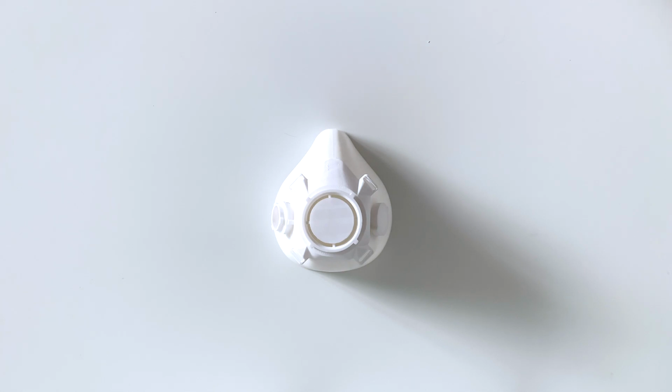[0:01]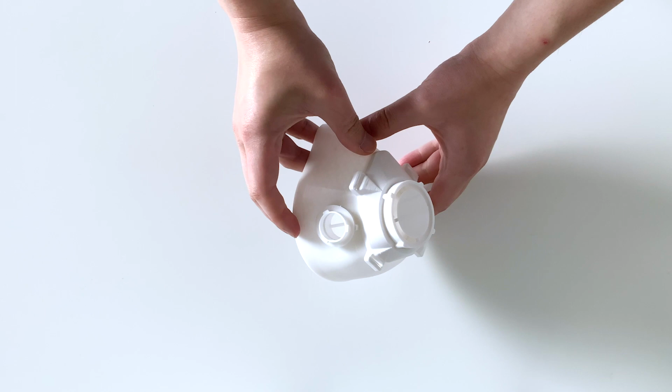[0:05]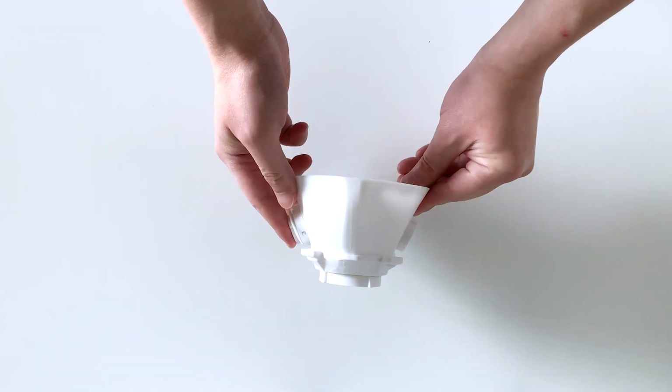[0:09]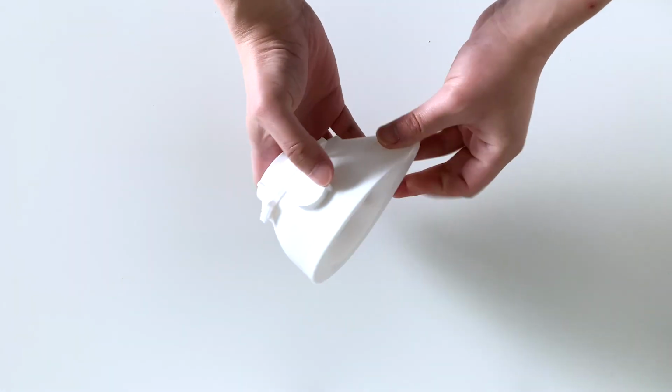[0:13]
How do you fit two systems into one mask? Some wanted the 3M respirator alternative, and others just wanted a simple setup with a simple filter. Well, here's my take. Let's go.
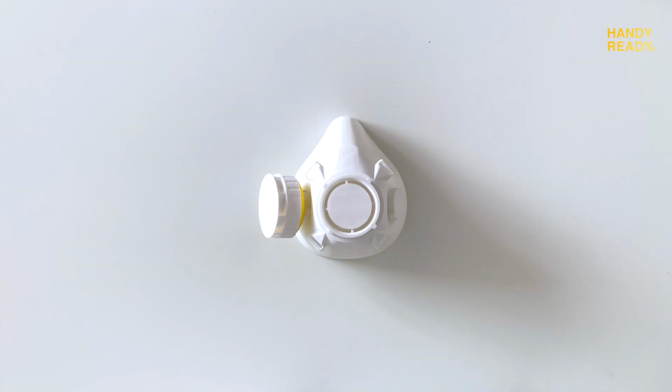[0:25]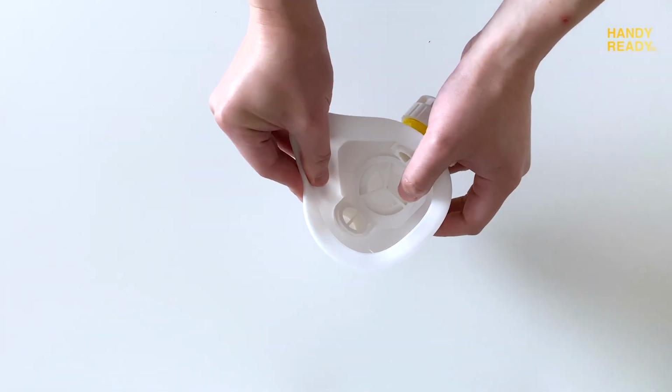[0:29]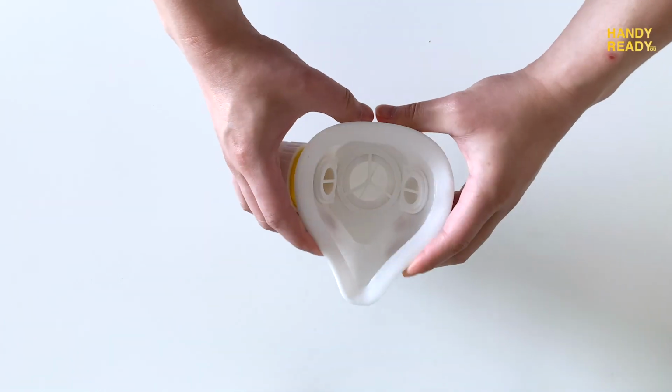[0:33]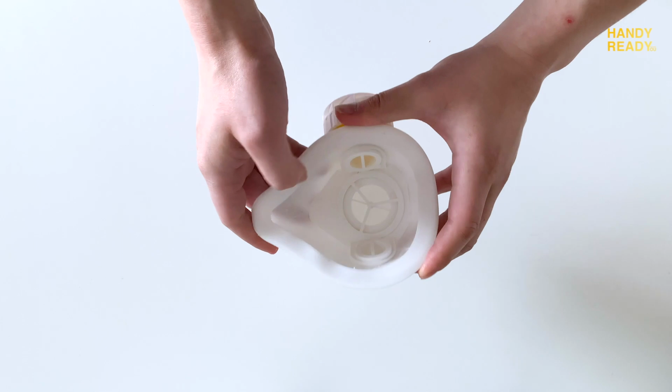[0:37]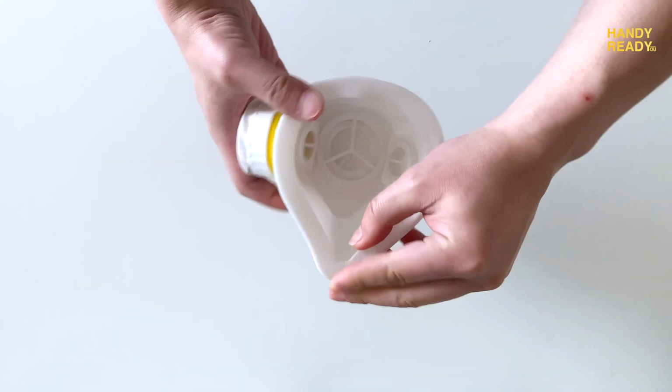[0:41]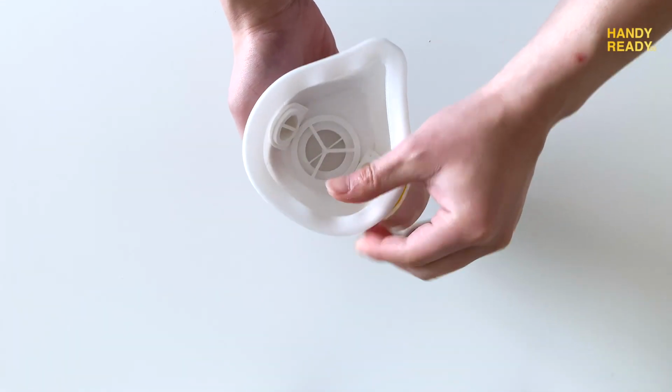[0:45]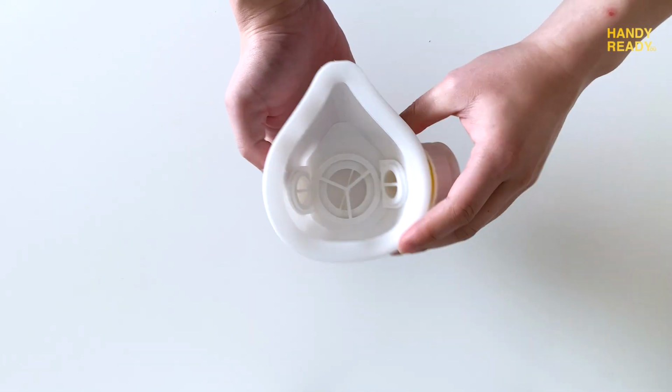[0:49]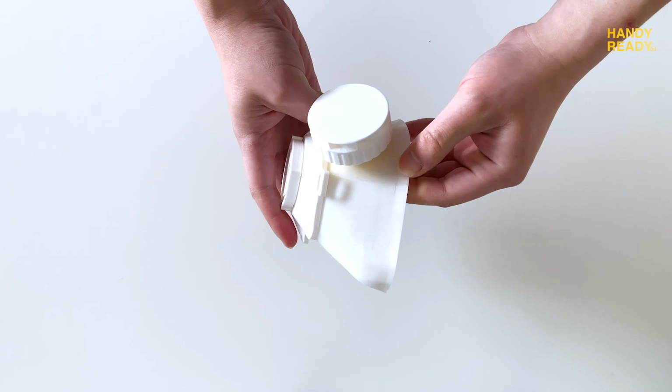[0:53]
Today, we will look at the 3D printed DuoMask. First, we will go over the basics and the design thinking behind it. Then, I will show you how to assemble it. Third, I will show you all my print settings specifically for Ender 3, so you guys can print it yourself. For those who wanted to jump ahead, you can check the timestamp in the description below.
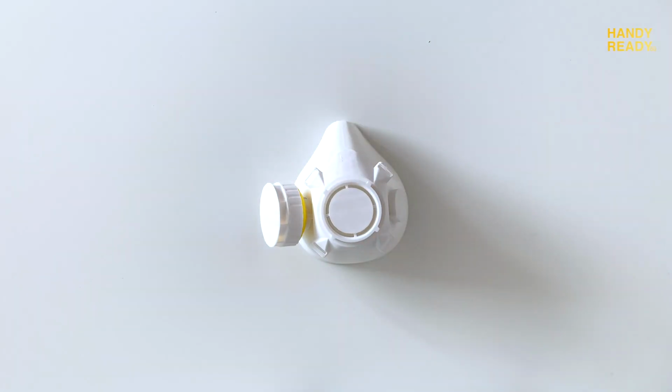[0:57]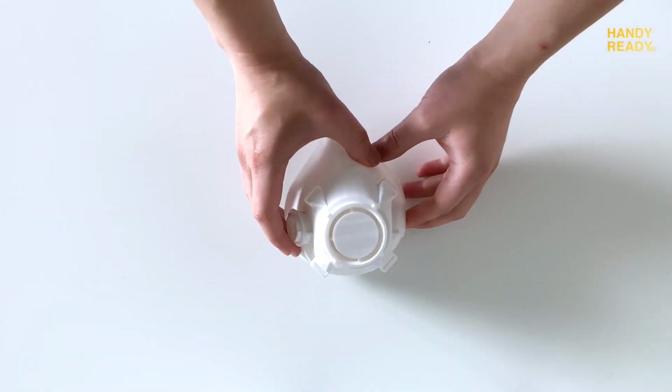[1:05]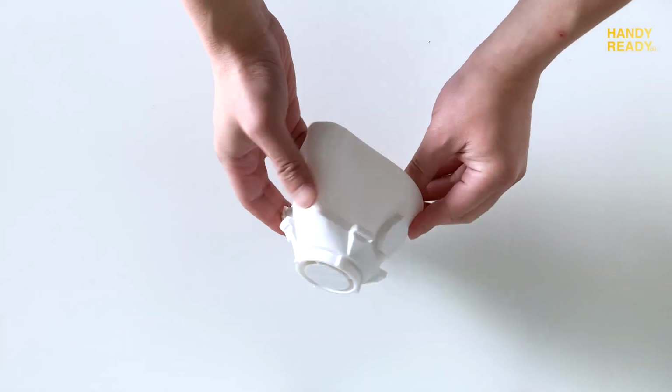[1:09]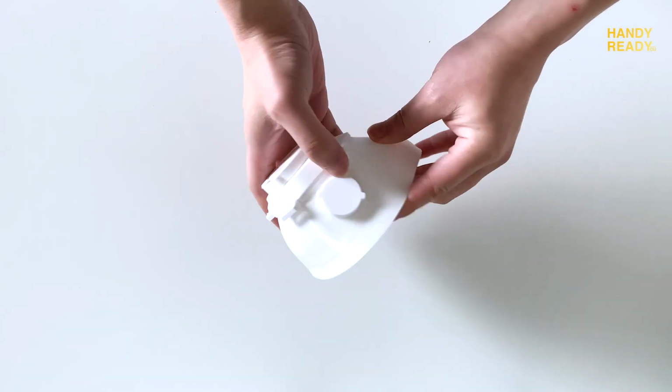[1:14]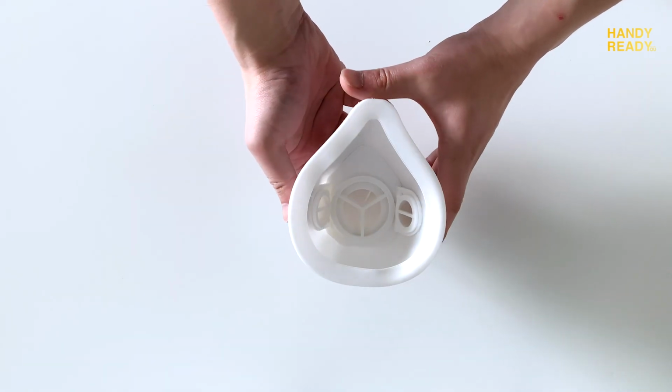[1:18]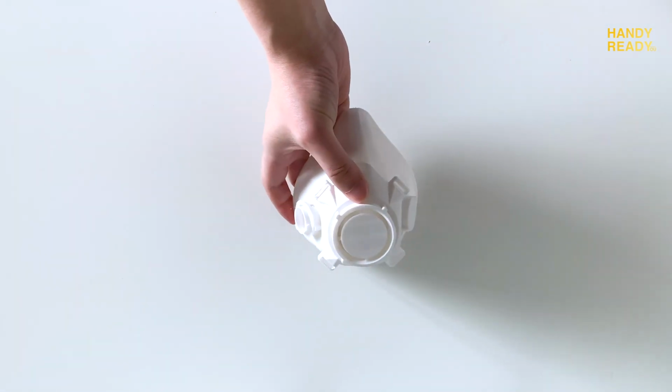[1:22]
So what exactly is a DuoMask? As the name suggests, this mask works in two systems. One, it can be operated with just a simple filter. And for those of you who need it to wear for a long period of time or require higher airflow and comfort, they can choose to use the more advanced 3M mount system with exhaustion system.
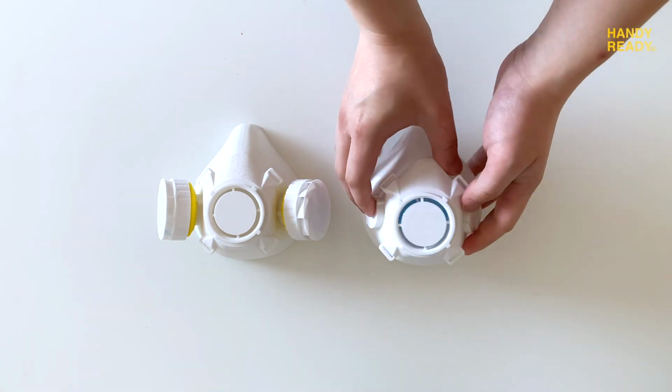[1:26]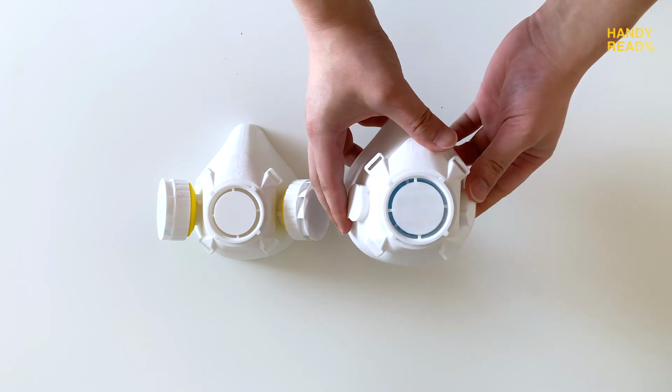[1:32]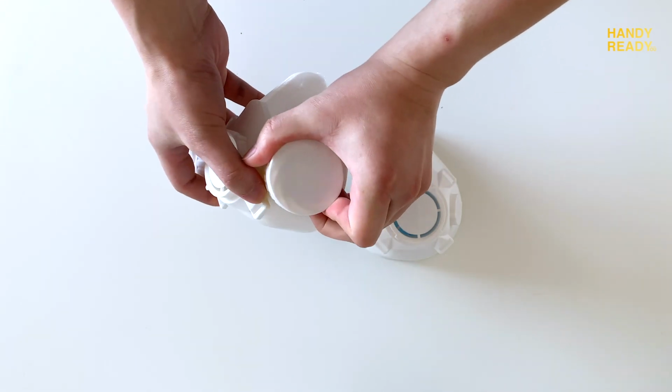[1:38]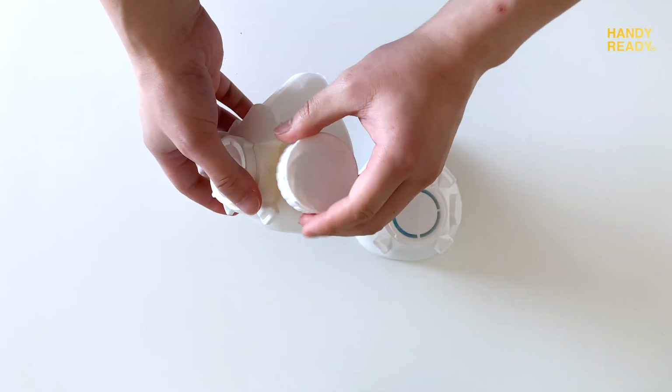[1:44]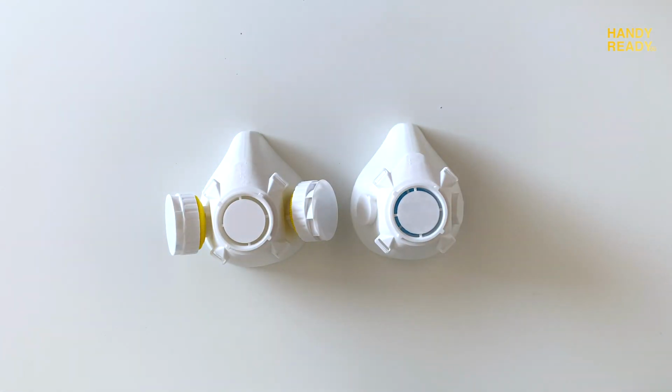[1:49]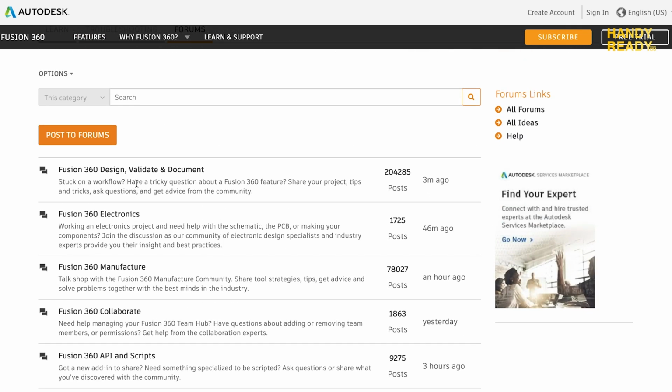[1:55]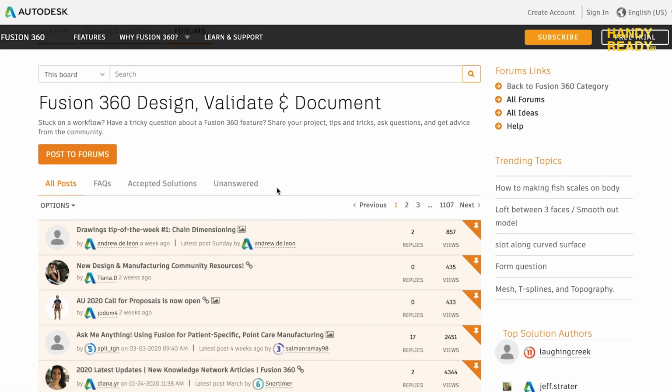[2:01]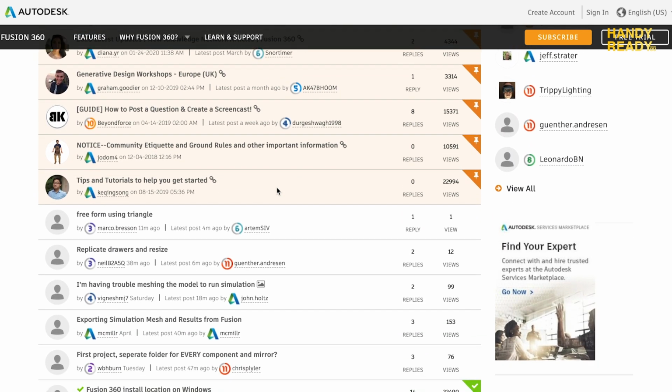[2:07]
I'm sure at this point you're a little bit confused, but don't worry. Let me explain the design, and by the end of it, I'm sure you'll know exactly which setup you will need. In regards to the design, the DuoMask took me roughly about 2 months to get to this stage. I must give a big thanks to the Fusion 360 community to answer all my beginner questions, as I had zero knowledge and background in 3D modeling. So for those of you who want to make changes and want to make a new design, do it. It's never too late. It's only too late if you never give it a try.
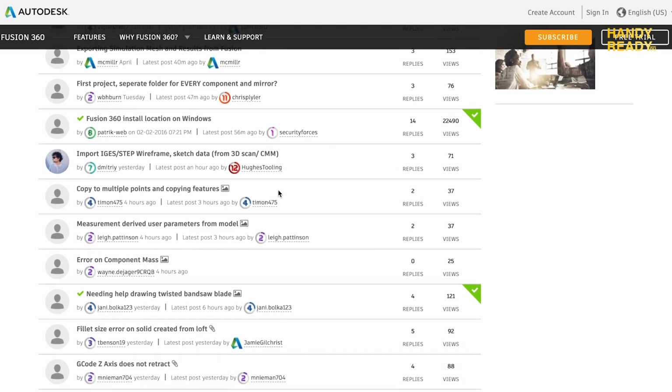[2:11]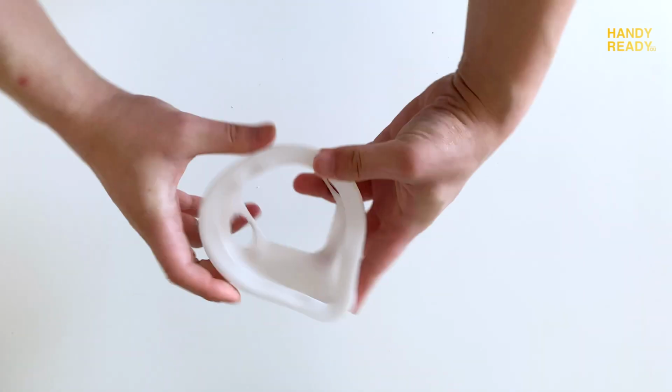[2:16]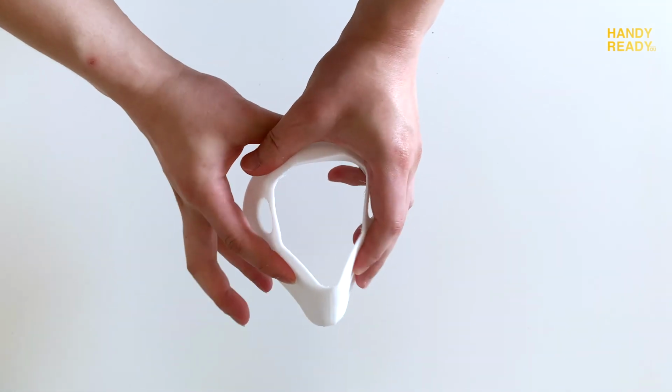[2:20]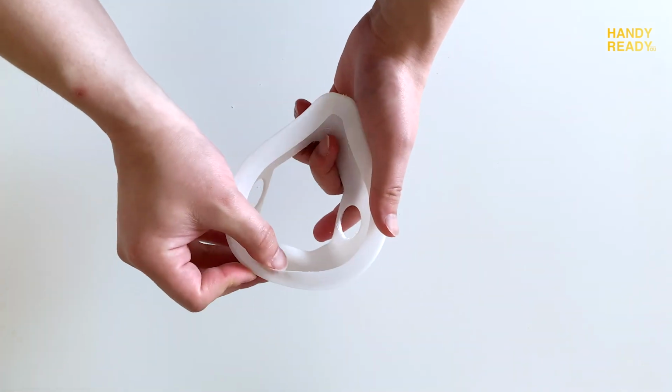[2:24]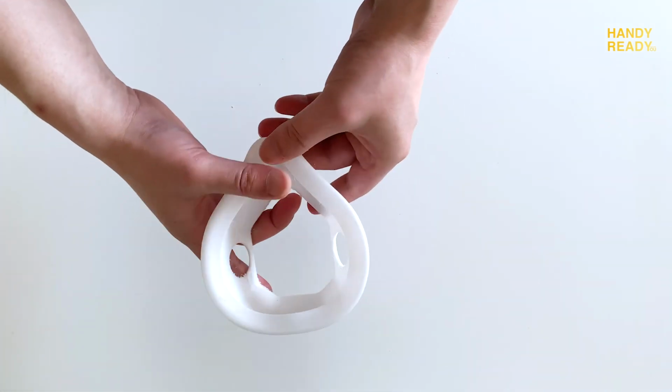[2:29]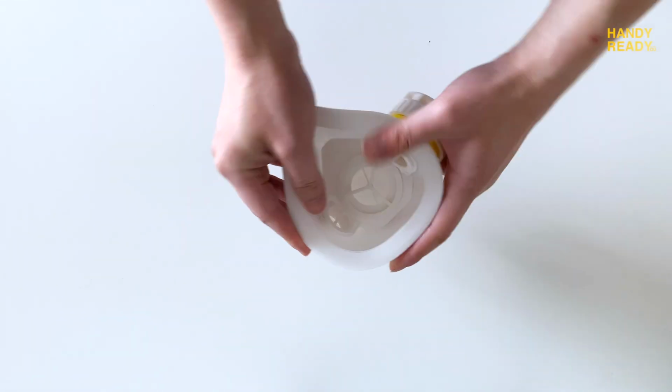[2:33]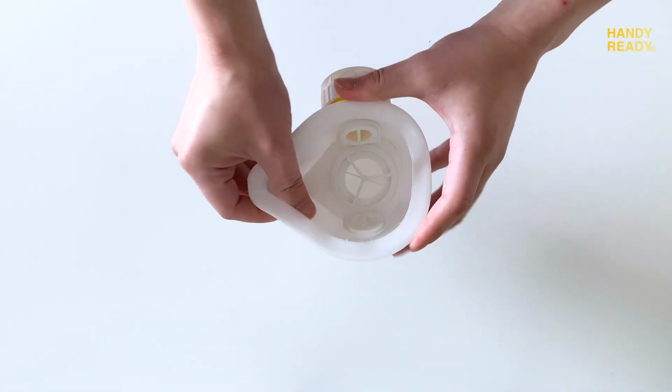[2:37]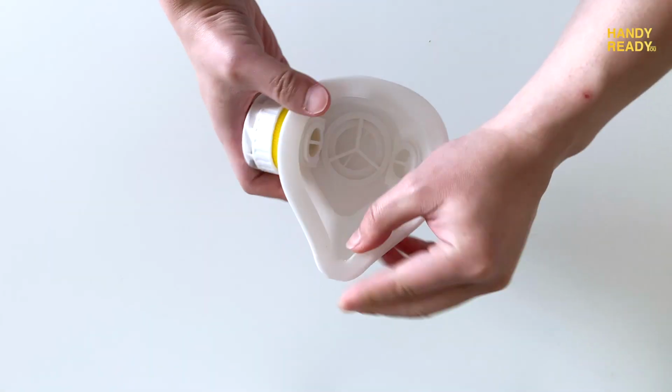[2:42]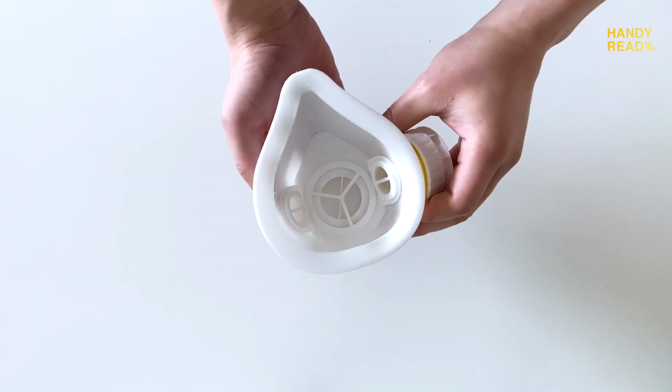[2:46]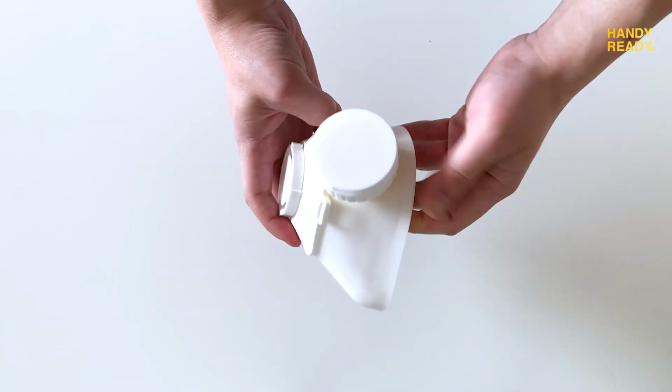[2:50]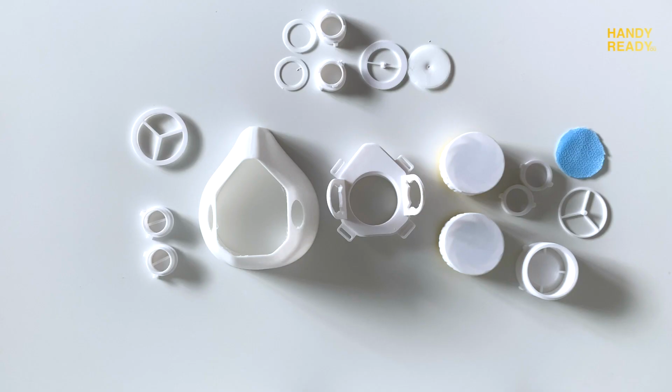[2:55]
With that out of the way, let's start with the major design obstacles. The number one key obstacle for any kind of mask is the seal. The mask must have a proper seal, or else why bother wearing a mask at all? As simple as it may sound, a proper seal has to do with a lot of things. For one, the fit and sizing. Then there's the tolerance for when you speak and your facial movement. Moreover, the comfort. And last but not least, to keep the consistency, no post-production or add-ons after the mask has been printed, such as adding foams, gluing, or stitching.
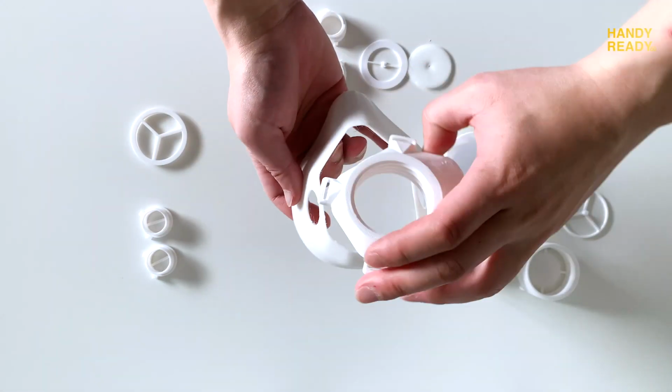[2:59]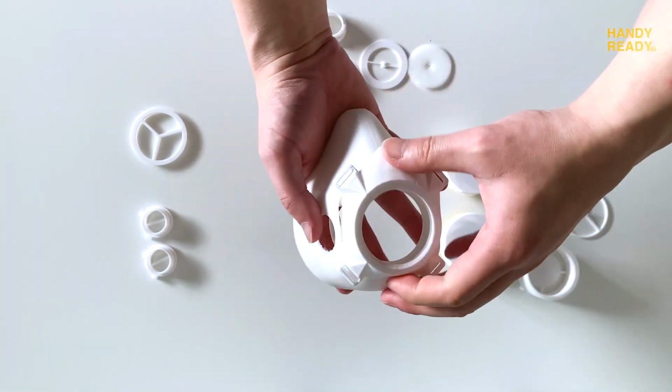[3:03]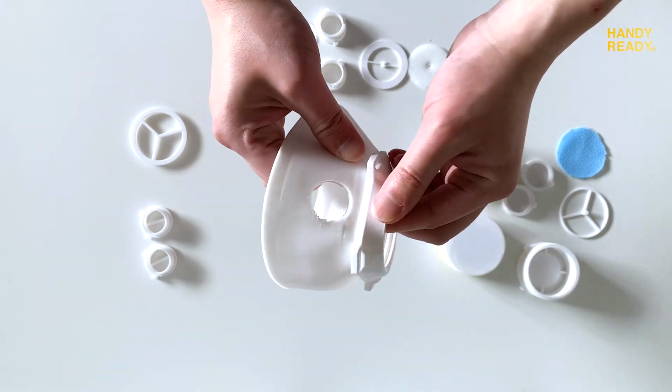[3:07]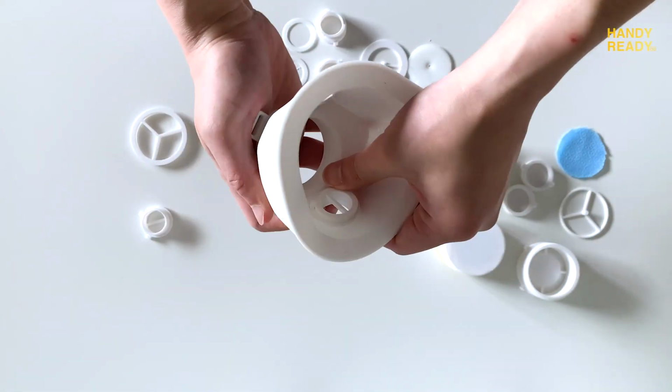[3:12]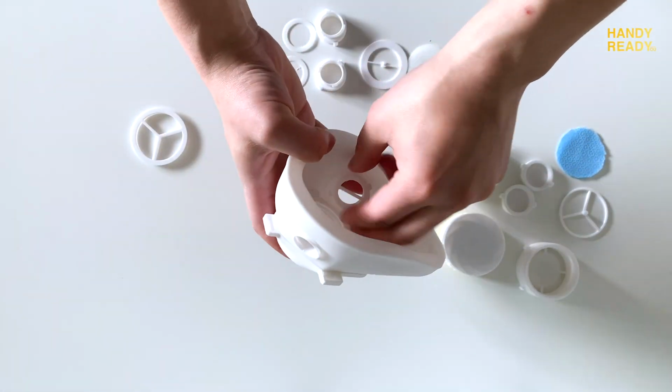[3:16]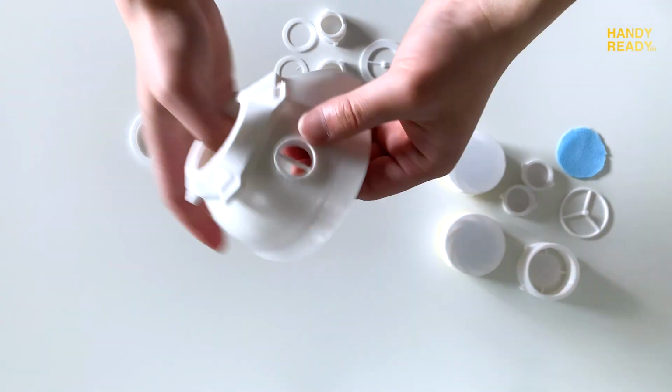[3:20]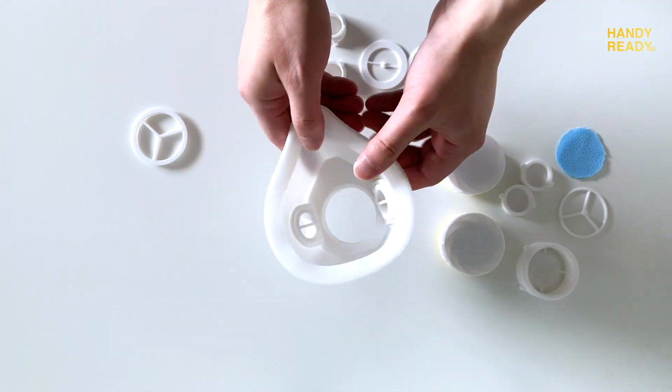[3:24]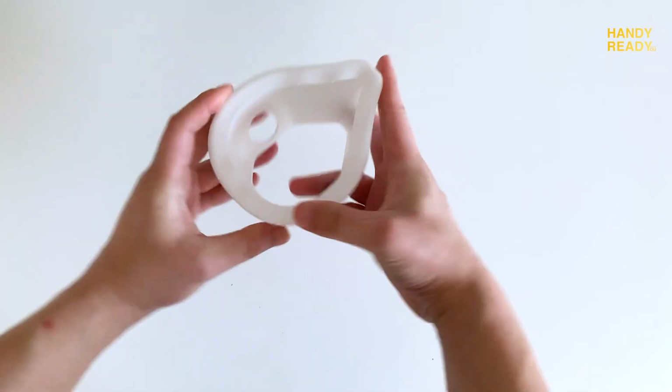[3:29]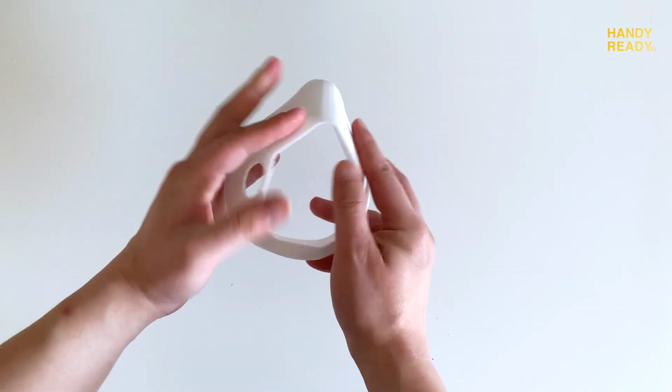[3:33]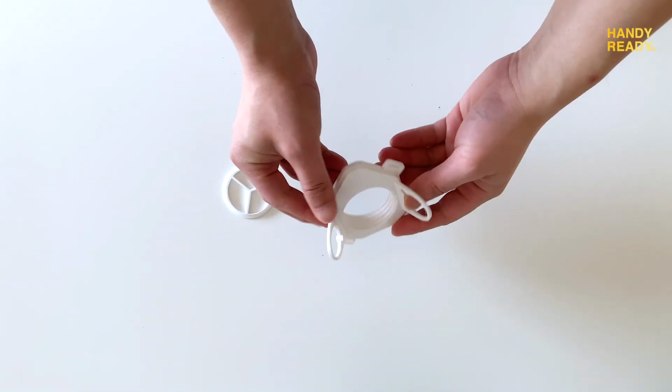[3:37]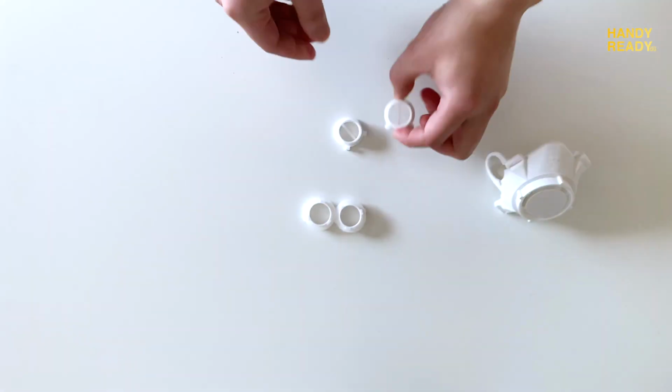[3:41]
With that in mind, I have decided to modularize into different parts because A, you can print different parts with different filaments and different materials. B, it is easier to make improvements for parts in the future. C, breaking into parts does not require support on printing. D, the components are easily replaced if they are broken or worn out. In terms of parts, the DuoMask is made with three major components: the cushion, which is the largest body of the mask, the core, which handles the filter and exhaustion system, and lastly, the adapter on the sides.
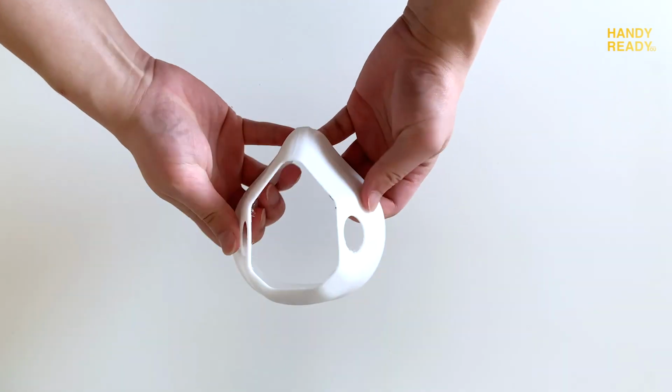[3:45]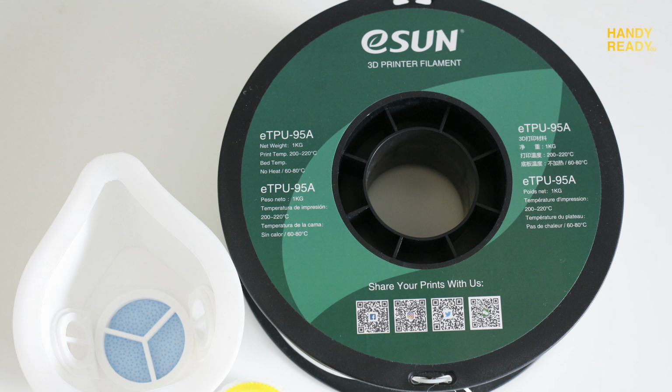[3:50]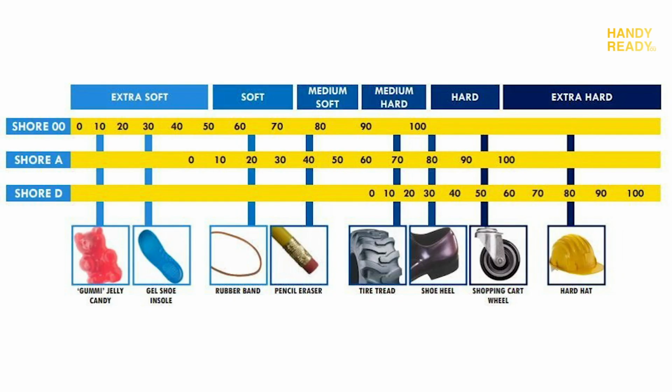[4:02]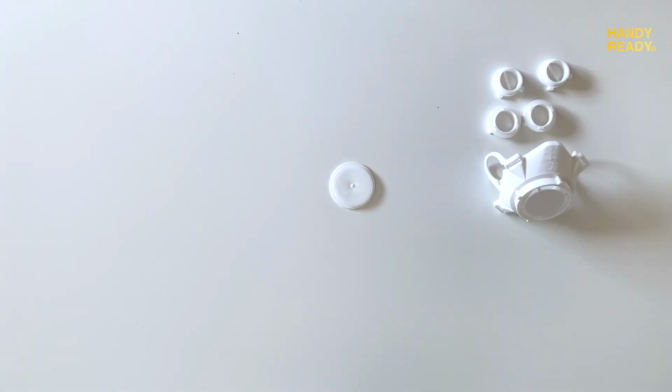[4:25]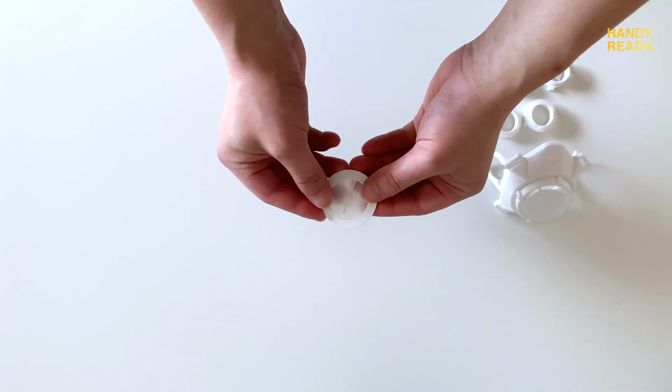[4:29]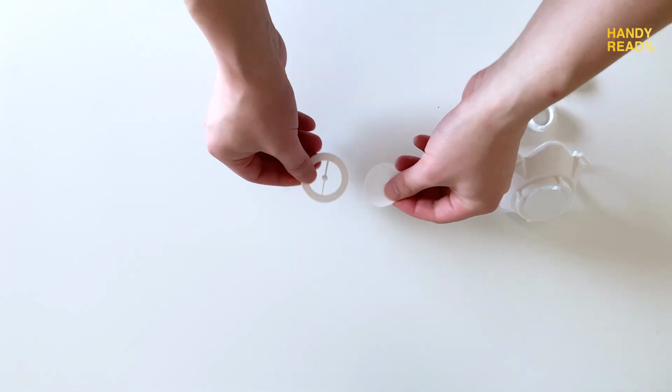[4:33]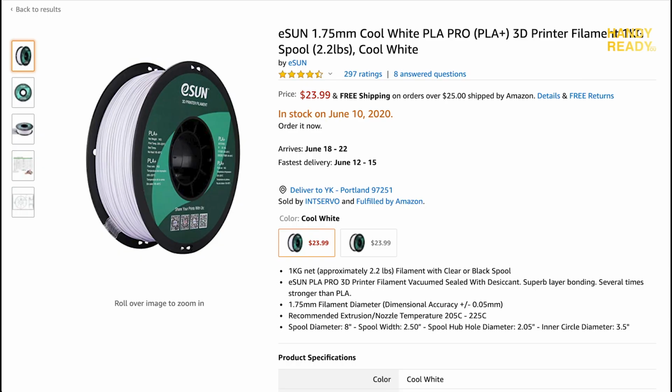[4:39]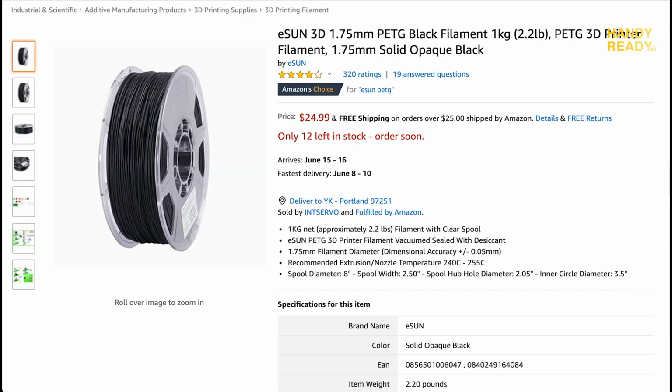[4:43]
For the cushion body, I've picked a flexible TPU filament as it gives a good seal. Specifically, I've used the 95A TPU, which is less flexible TPU, but provides the softness and sturdiness for the main body. The way to read how flexible or soft a TPU is by the number. The lower the number, the softer it is, and vice versa. The higher the number, the harder it is. With the current design, I'm sure you can use the softer TPU, but I chose 95A because many are printing with Ender 3 and it is easier to handle. And most important of all, I was able to print great results with the 95A filament without any new purchase for the extruder. As to the core and adapter, I've picked PLA as it is quite handy to most.
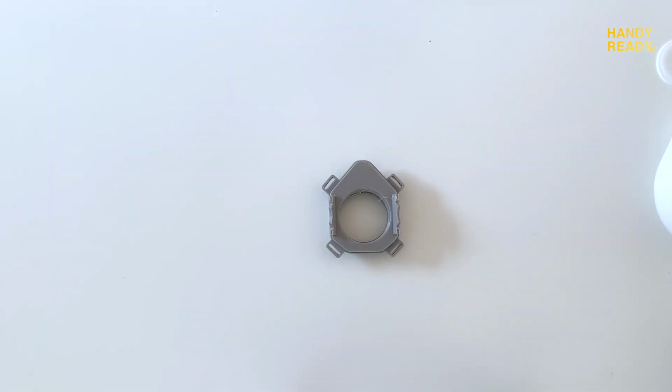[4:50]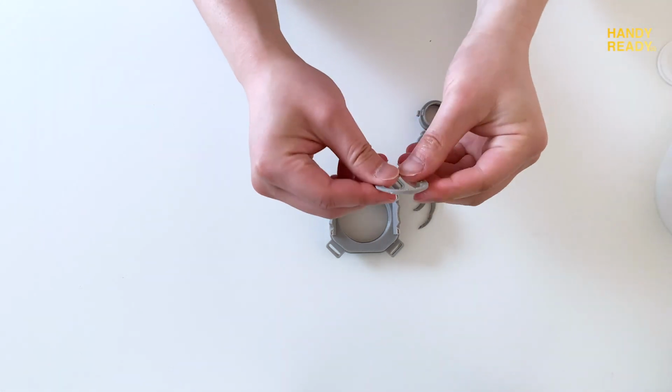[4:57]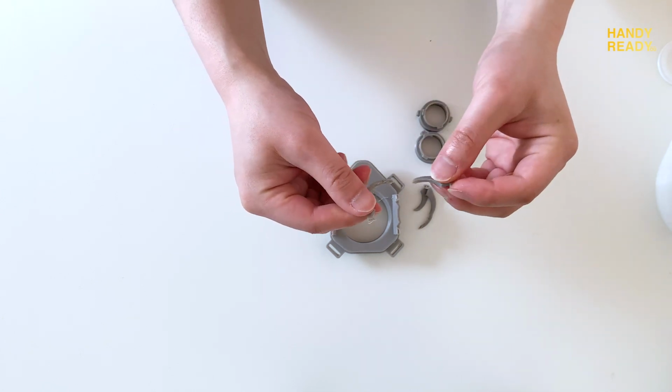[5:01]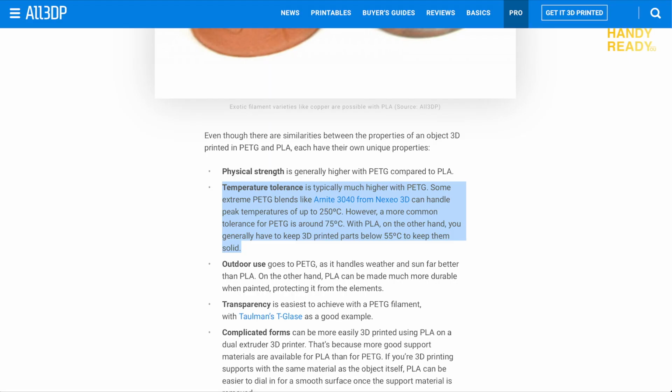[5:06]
I've also tried printing it with PETG, but I've found that printing in PETG requires much higher infills, or else it can snap easily, especially on smaller fine prints. Of course, if you have the time, PETG does yield a better durability, especially under heat, as the heat tolerance is much higher. Either way, both materials should work fine. It is just a matter of personal preference and availability.
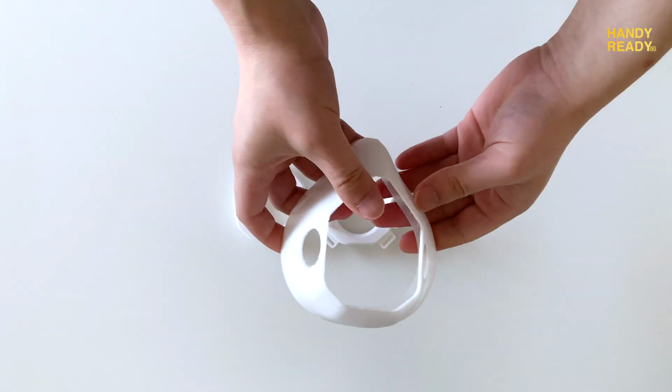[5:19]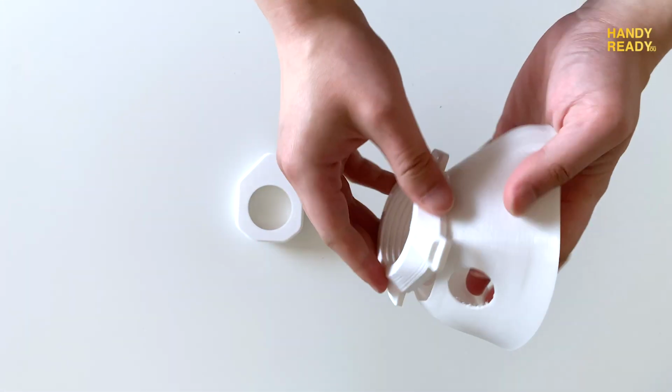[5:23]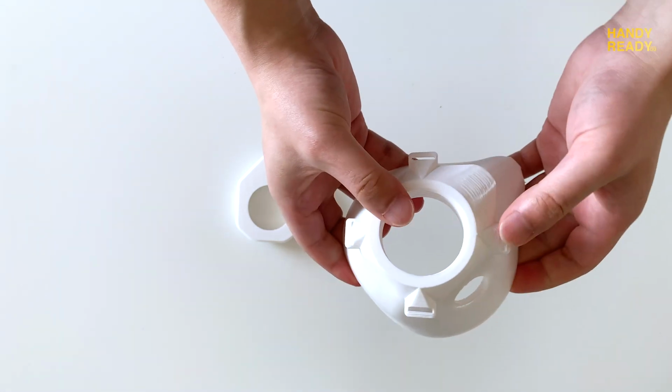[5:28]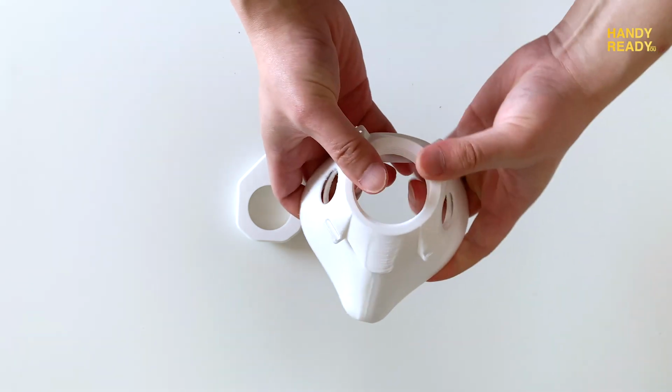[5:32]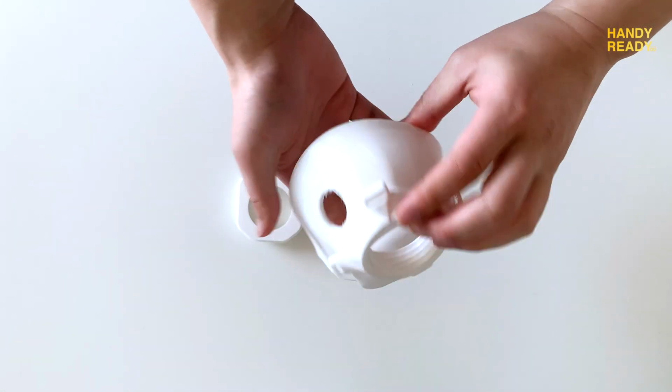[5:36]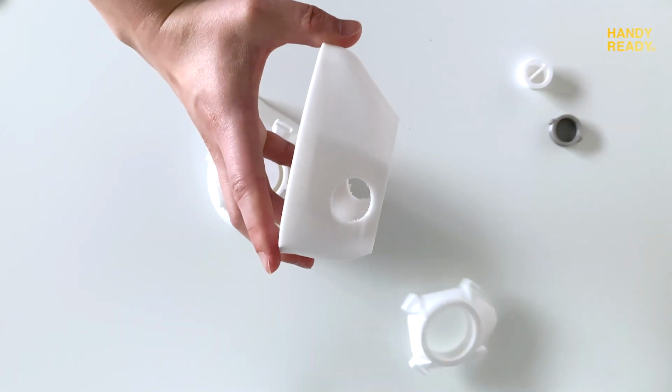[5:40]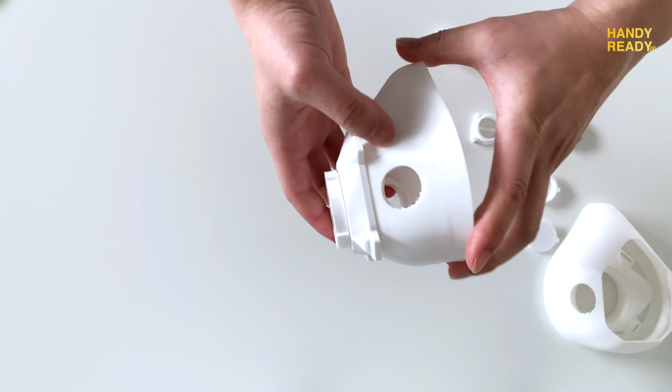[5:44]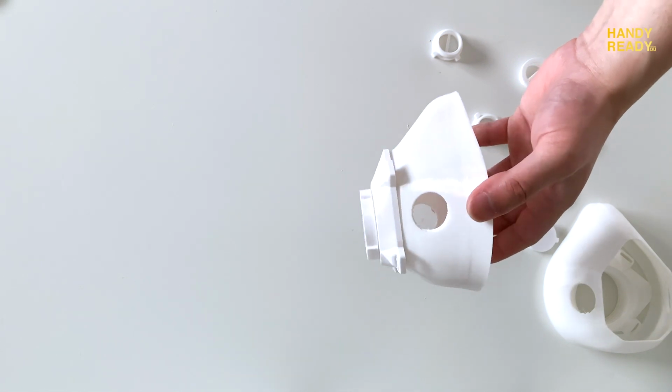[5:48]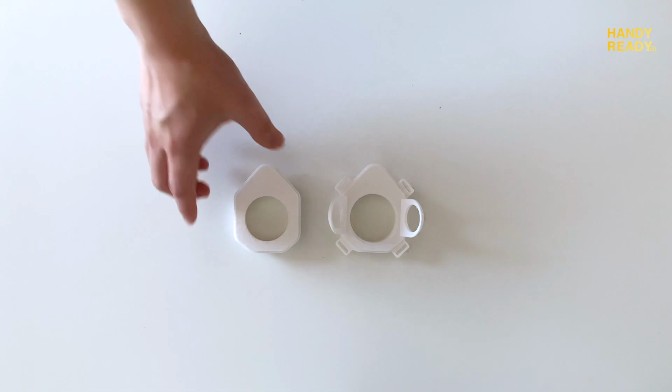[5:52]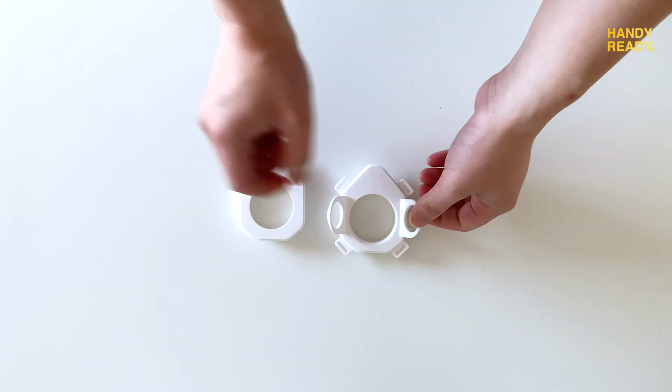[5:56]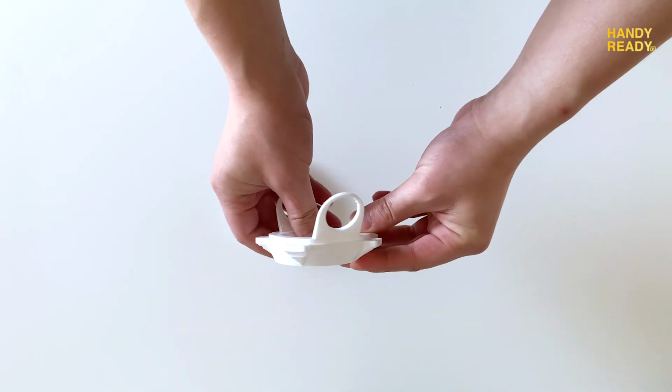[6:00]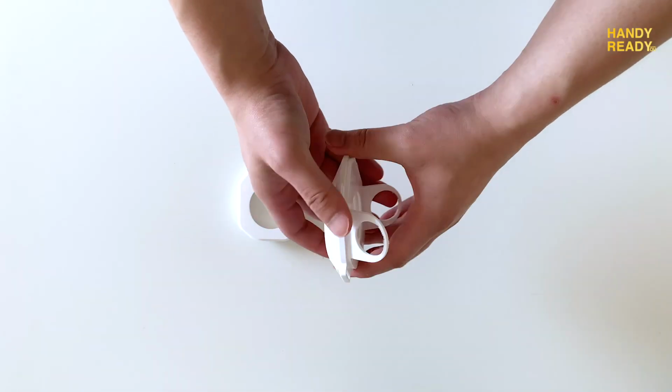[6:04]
The core plays a big part in this design. As the name suggests, it is where everything happens and connects. The strap, the filter or exhaustions, the adapters, and the connection to the cushion. Speaking of which, because the cushion and the core are printed with different materials, merging them securely with a good seal was quite challenging. I've actually spent a lot of time figuring out how to do it, and at last, I've designed the wings which connect the core with the cushion and the adapters, forming a very sturdy structure.
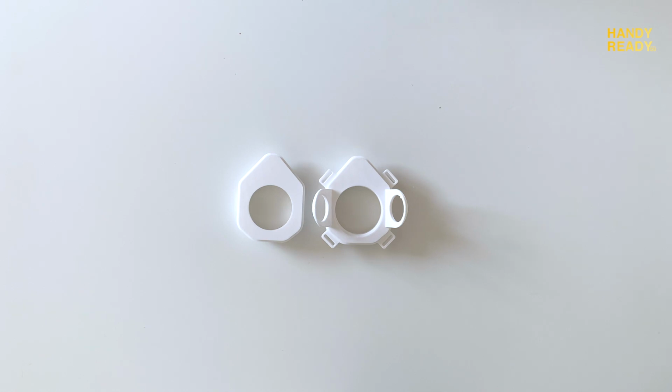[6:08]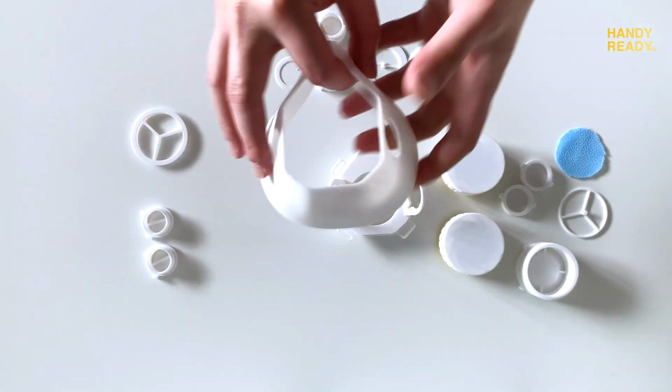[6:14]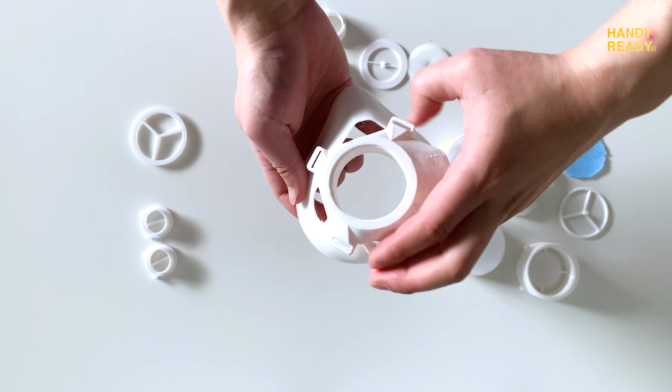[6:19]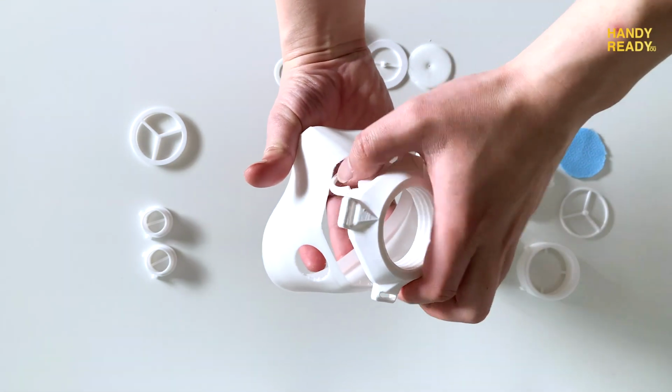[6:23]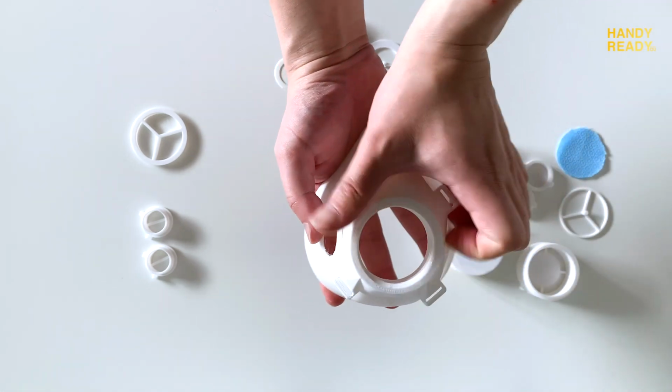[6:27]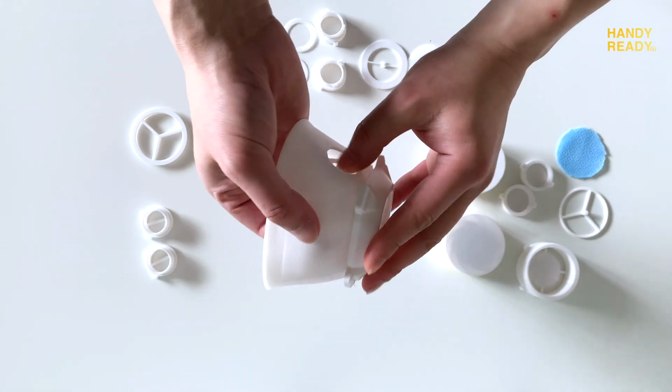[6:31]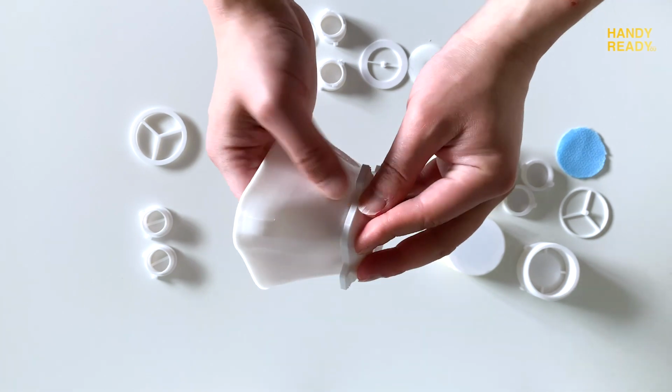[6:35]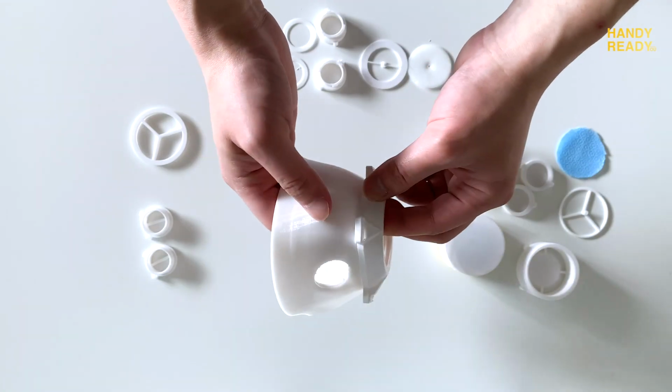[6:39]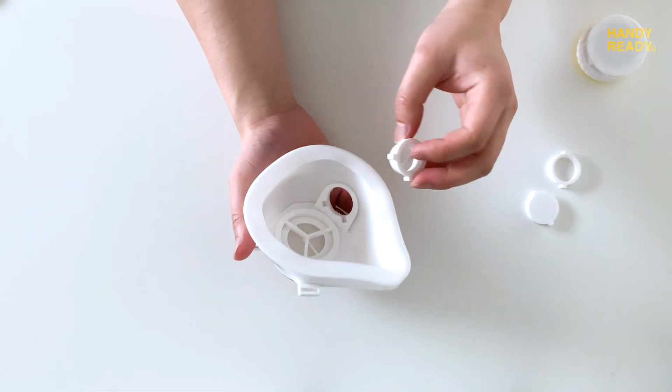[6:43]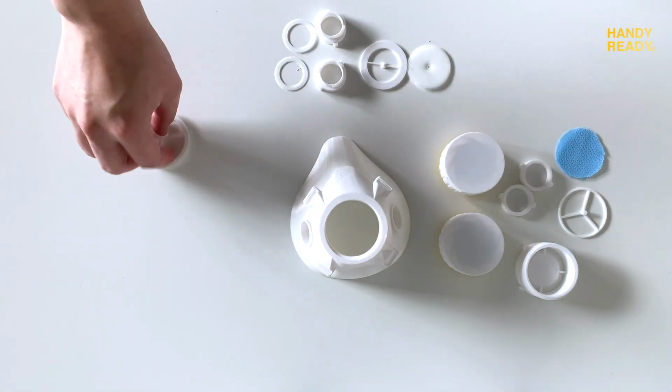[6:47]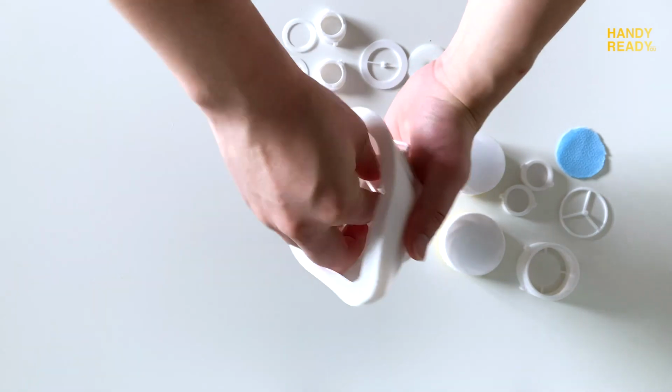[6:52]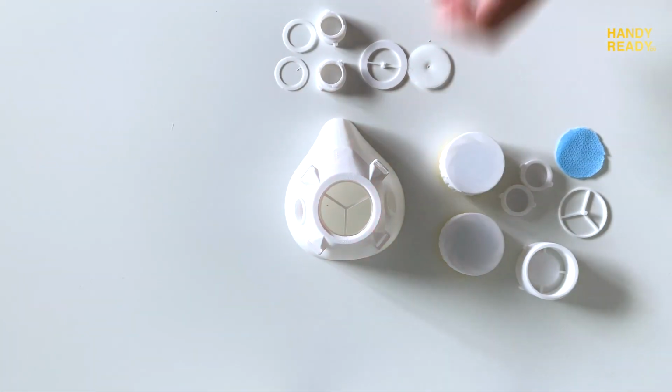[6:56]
Let's talk about the assembly. To assemble the DuoMask, we need to first twist the core 90 degrees towards the cushion. The orientation will give enough room for the wings to fit inside the cushion with just a little bit of pressure on the cushion from top and bottom. Once the wings are in, twist the core to the proper orientation and make sure the rims and edges are properly attached. After that, we insert the inner adapter for both sides. And finally, we twist the core backing, and this forms the foundation assembly for the DuoMask.
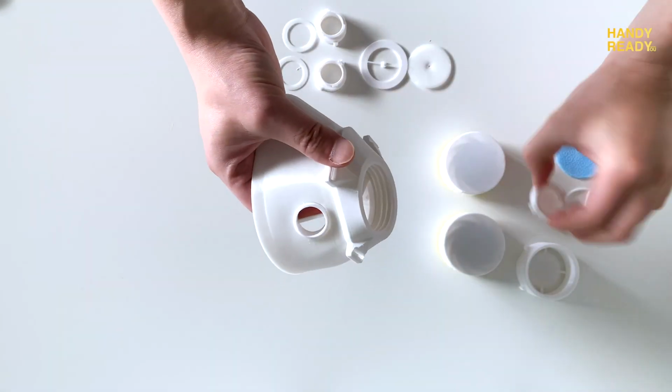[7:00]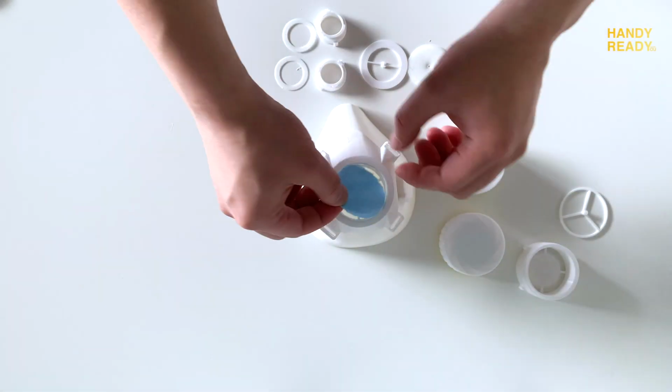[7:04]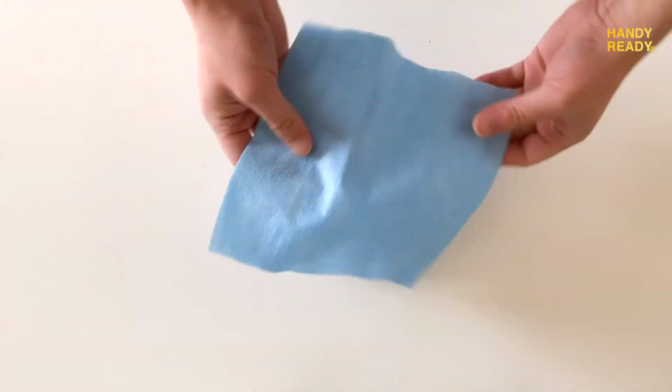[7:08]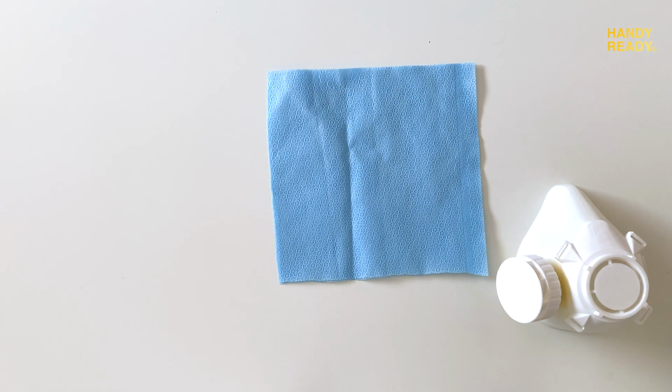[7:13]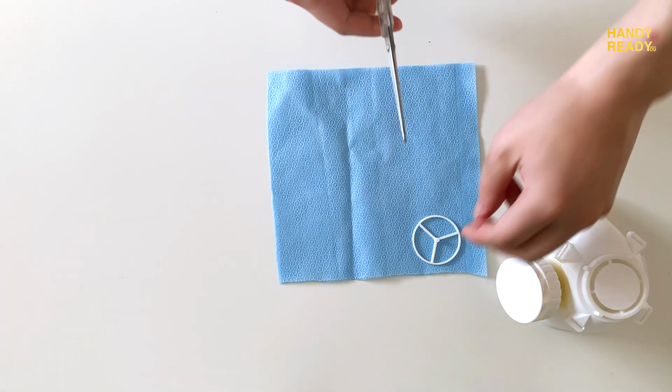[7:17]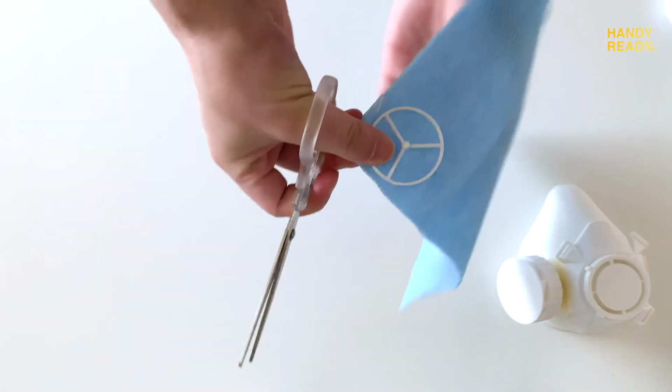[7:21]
For those who wanted to do a simple setup, twist the outer adapter seal for both sides. Then we put the filter inside the core. In terms of filter, I've used a cutout from the sterilization wrap as it is 99% PFE. For those who have no clue what a sterilization wrap is, you can check out my previous video I've made in the link down below.
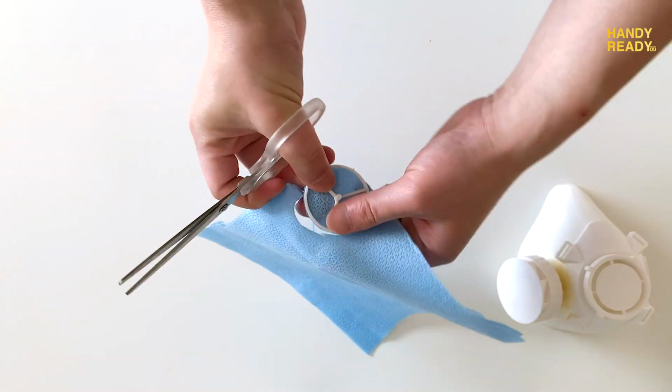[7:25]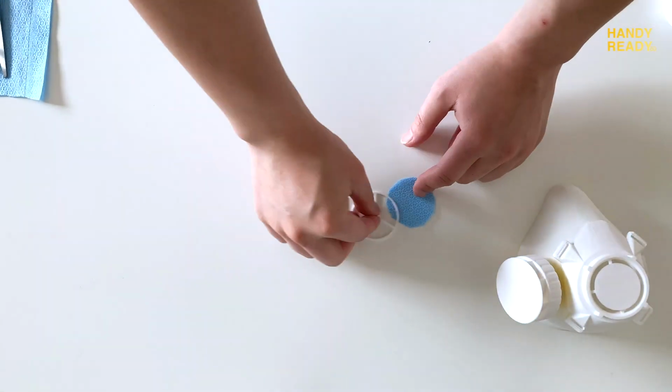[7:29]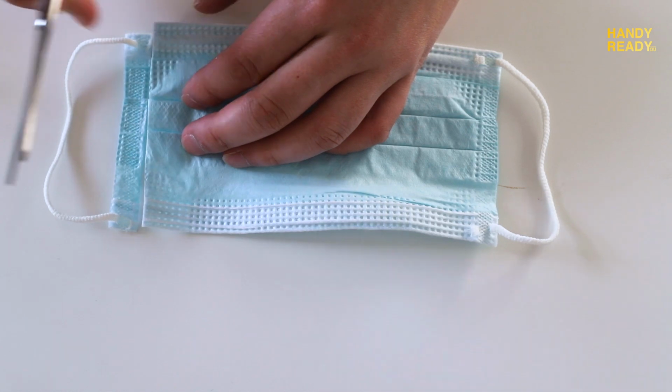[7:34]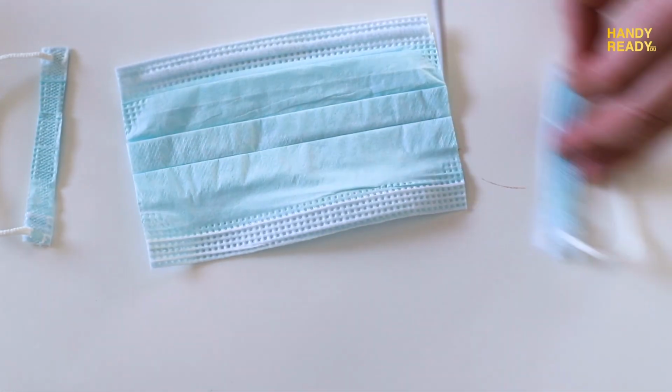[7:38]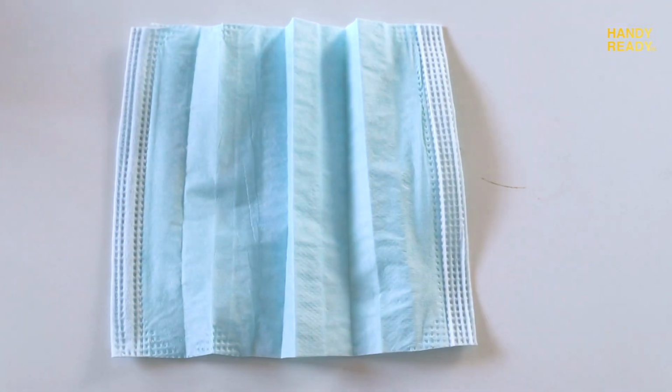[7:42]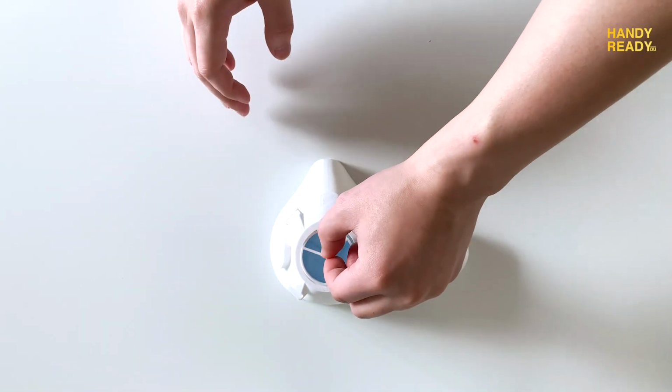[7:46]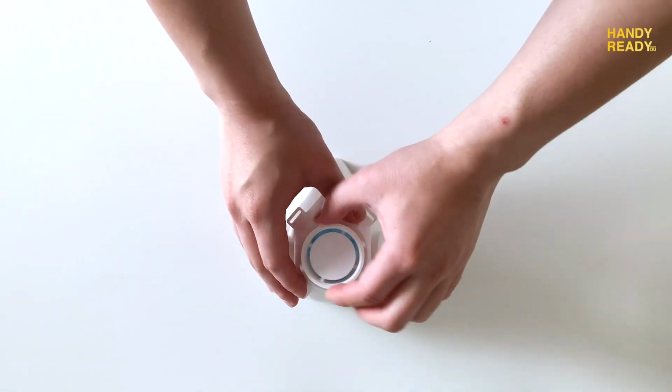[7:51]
Another alternative to sterilization wrap is that you can cut out from a surgical mask. And I know some of you are still using cotton pads as a filter, and I don't really recommend using it as it doesn't have a high enough filtration. Okay, once the filter is in, we put the filter backing to secure and flatten out the filter. And lastly, we twist the cover to finish up the assembly.
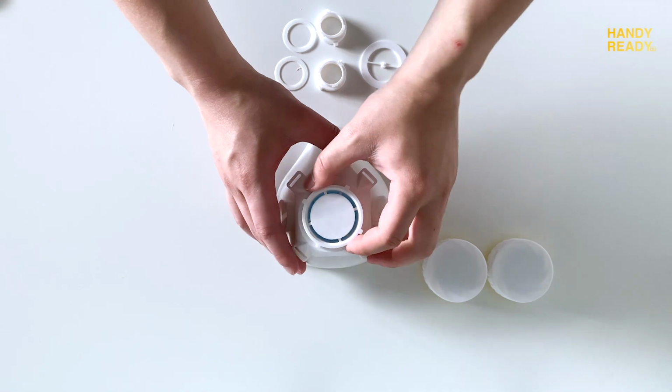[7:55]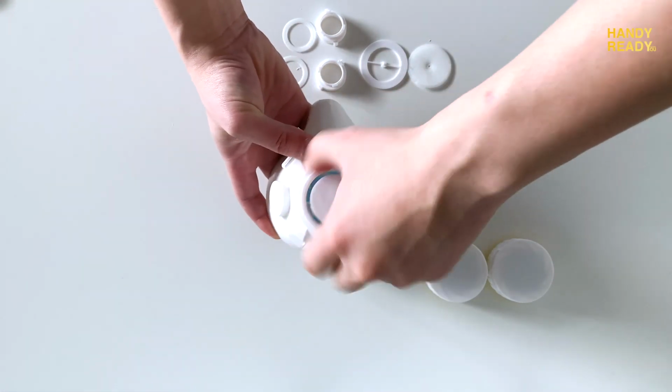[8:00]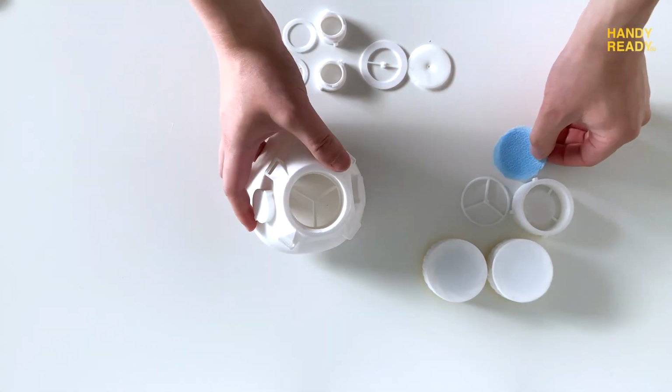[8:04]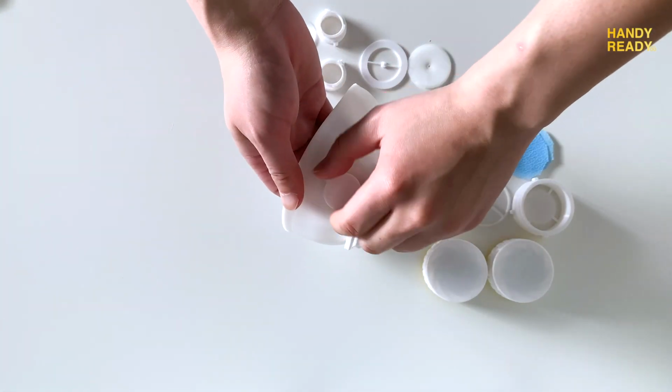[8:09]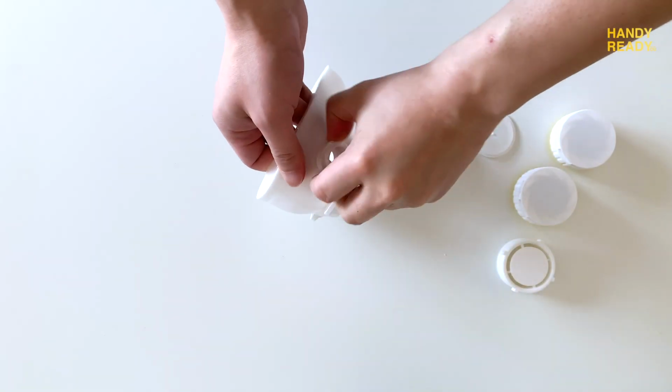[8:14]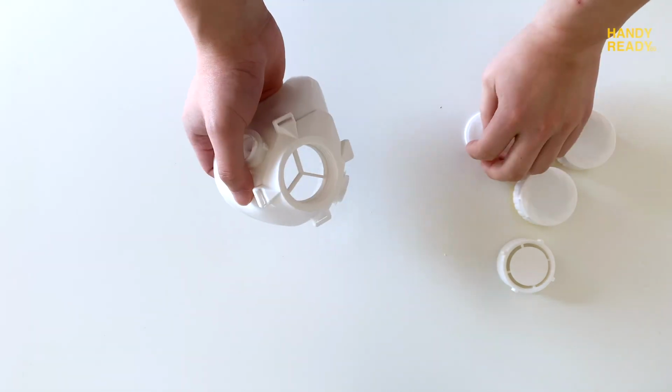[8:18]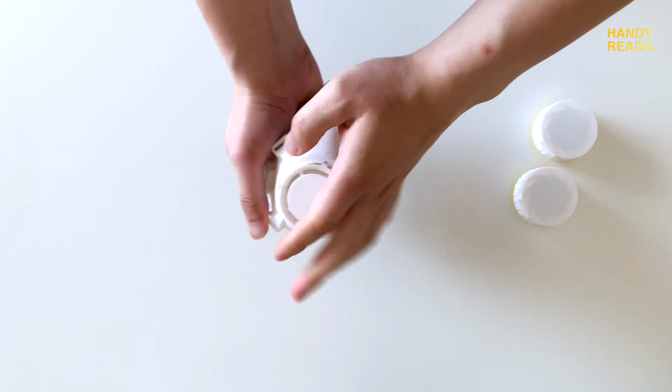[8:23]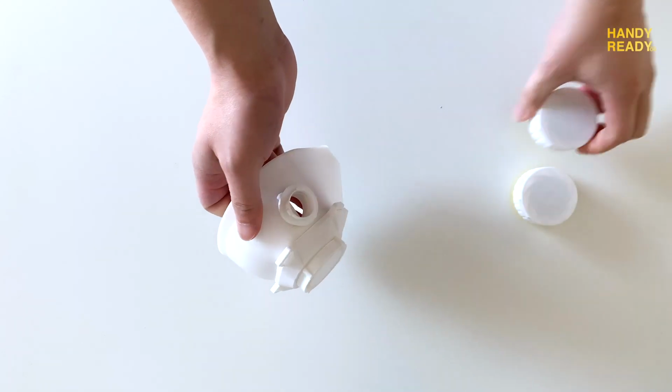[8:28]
For those who wanted a more advanced setup with a 3M mount and exhalation system, first, we need to remove the cover, filter backing, and the filter. Then the adapter seal from both sides. Now that we're at the foundation, we put the 3M mount adapters on both sides and put in the adapter ring. Then assemble the valve TPU with the valve backing. And lastly, put it inside the core and twist in the cover.
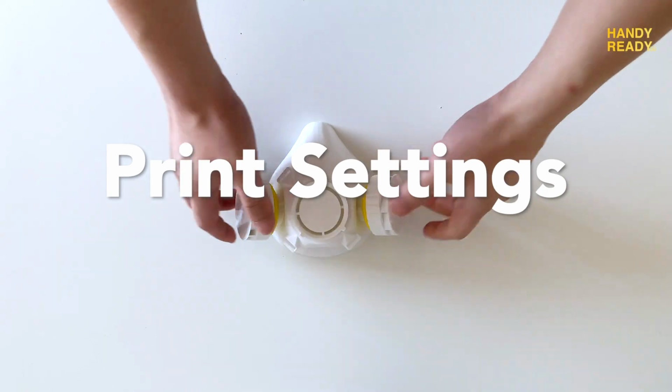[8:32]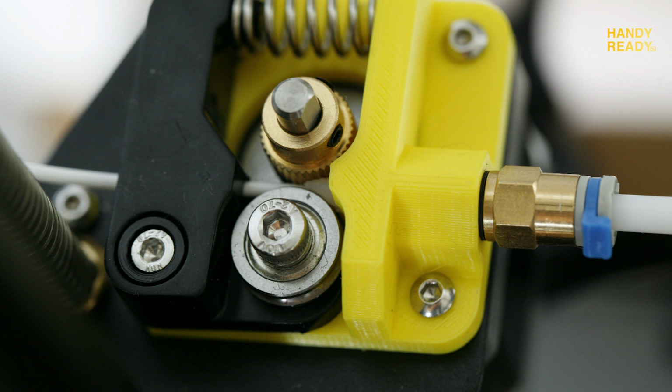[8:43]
In terms of print settings, let's start with the most difficult part. I must say printing TPU was a nightmare on the Ender 3. It literally took me 3 days to figure it out. In short, it's all about the extruder. It doesn't allow the flexible filaments to push through consistently. For details, you can check out Chuck's video. I have linked it in the description down below.
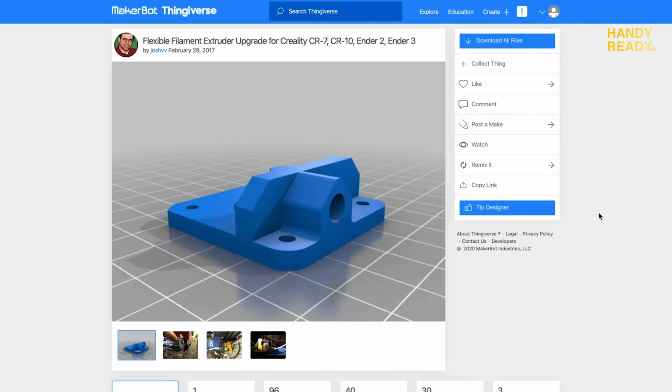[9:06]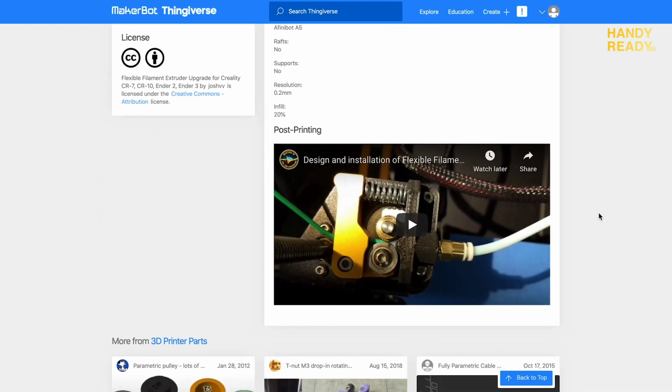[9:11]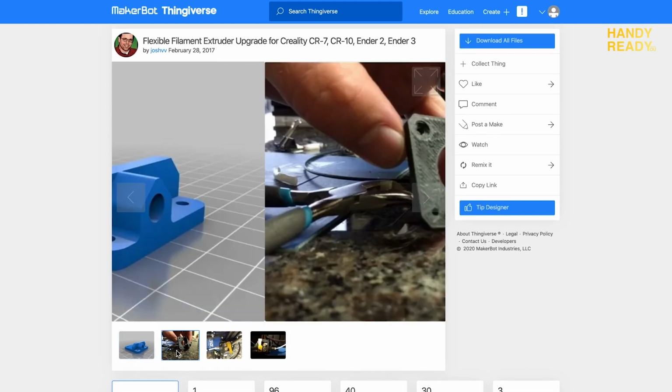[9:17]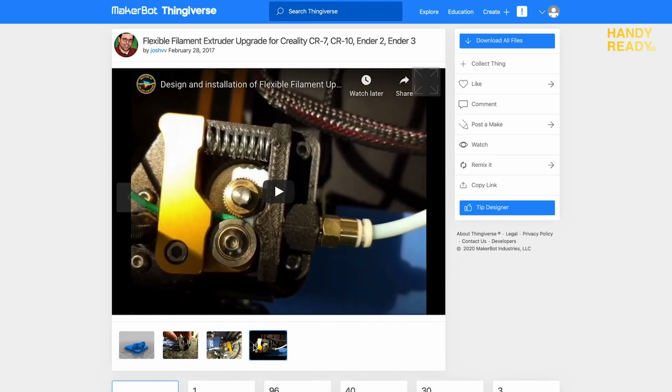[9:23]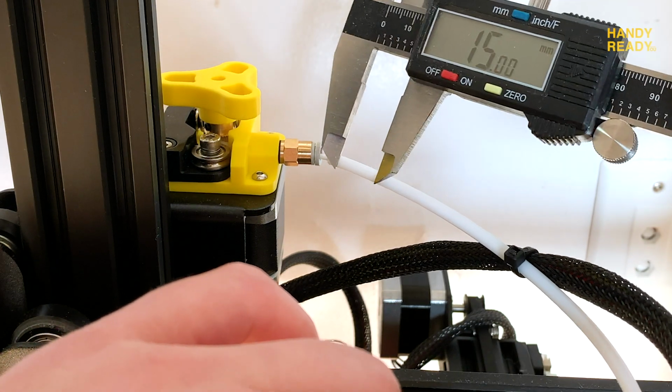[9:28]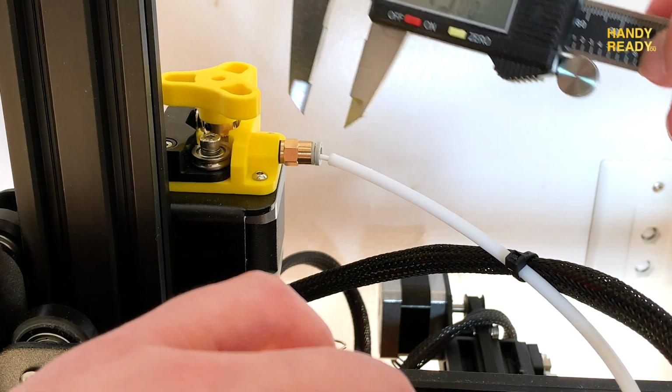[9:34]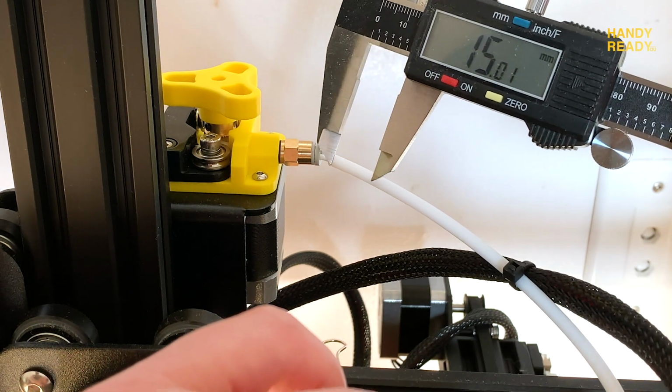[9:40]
To overcome it, there are two things we need to do. First, we need to print out a new extruder. I've included the Thingiverse link in the description. Two, we need a 15mm tube insert into the new extruder. If you have a PTFE tube around, that's great. But for those who don't, worry not, I have a workaround. Instead of buying one and waiting for the shipping, I might as well just cut it right from the white tube that comes with the Ender 3, the tube that's going into the extruder.
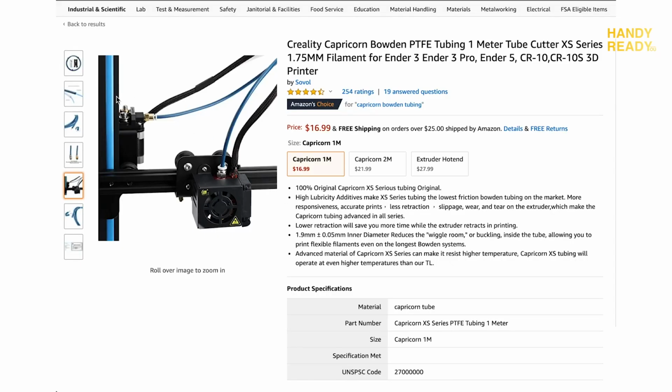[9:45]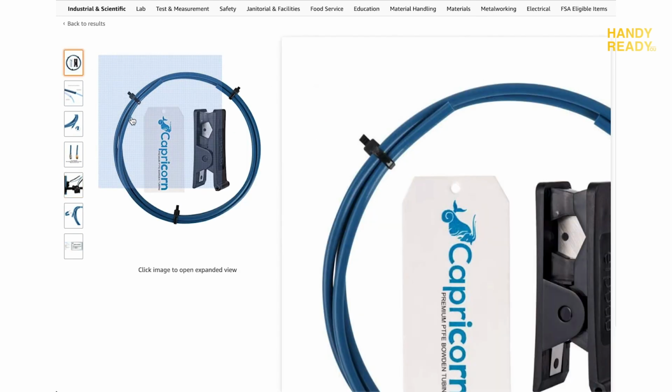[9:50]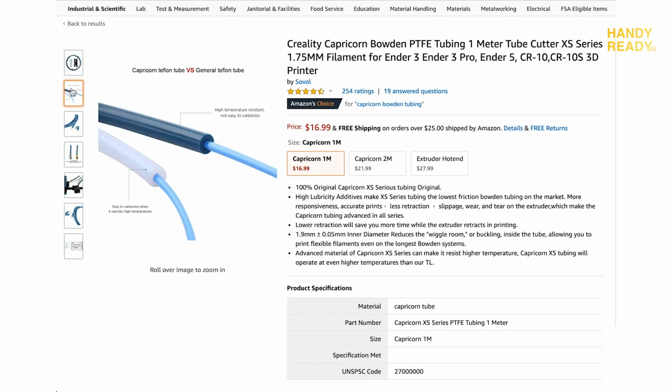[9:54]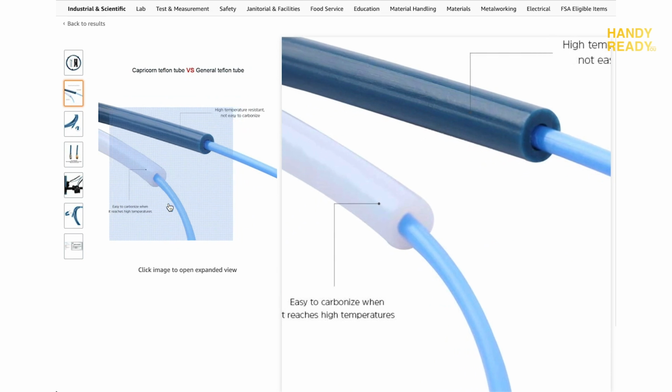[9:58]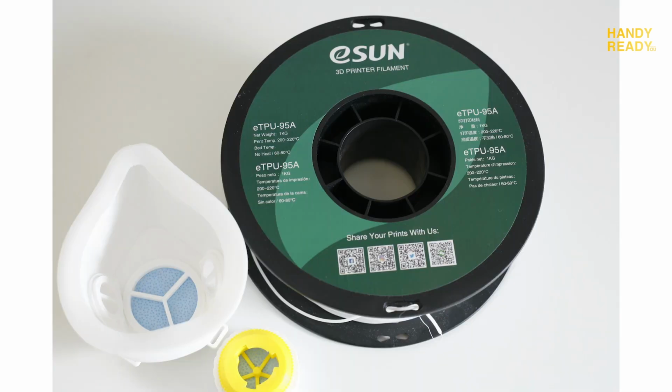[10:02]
Give this a try first. For me, it works perfectly fine. And if anything goes wrong, you can always order a new tube. With the extruder and tube tip in place, the TPU filament should push through nicely. I'm using the eSun 95A TPU, and here are the following settings that I used on the Ultimaker Cura.
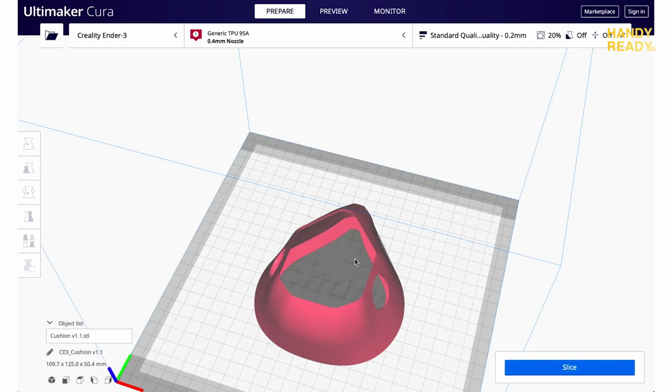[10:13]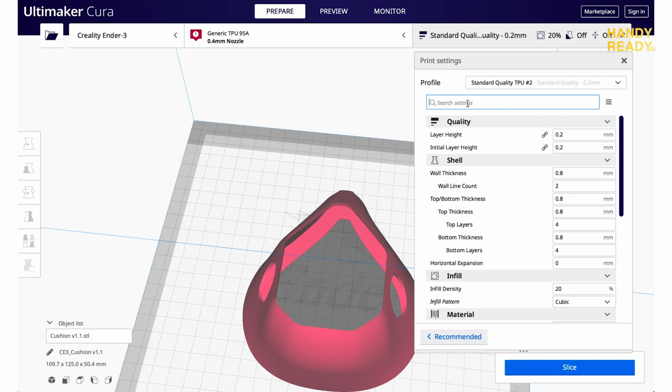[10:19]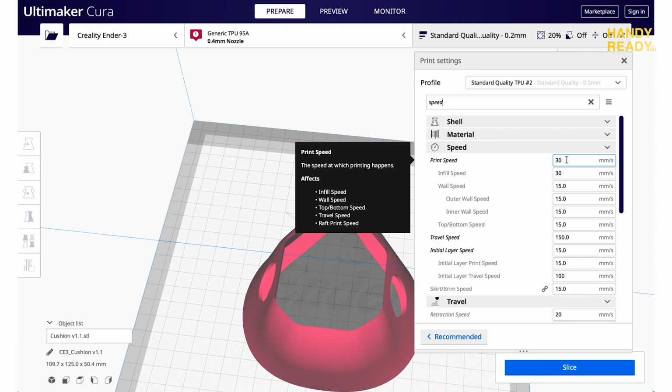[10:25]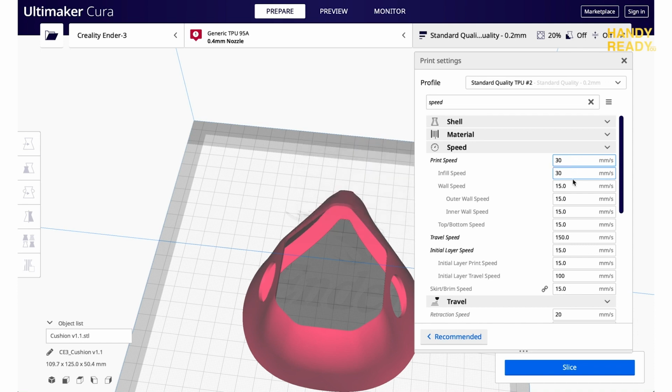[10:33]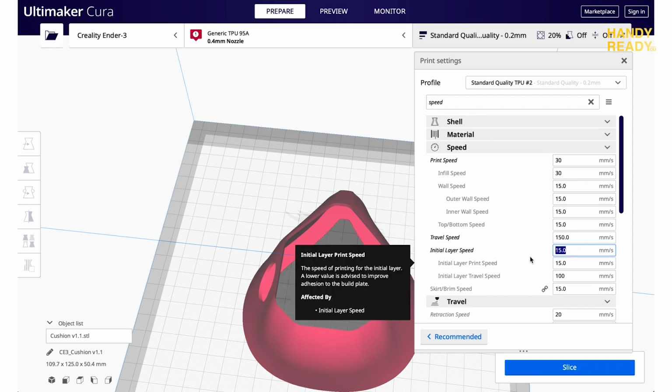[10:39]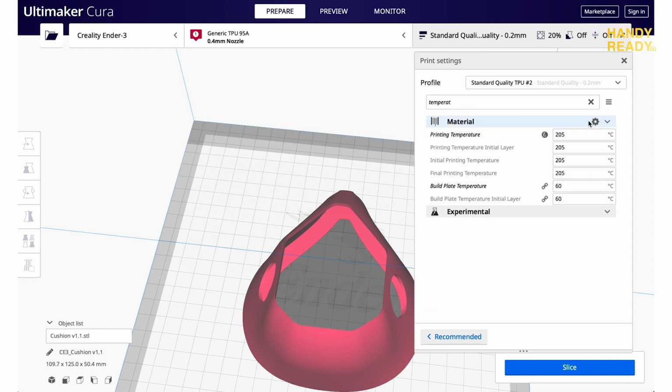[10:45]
In terms of printing TPU, the number one priority is speed, but not in a fast way. TPU likes it very, very slow. The more flexible it is, the slower you should be running your print. I set it at 30 millimeters per second on a 95A TPU and 15 for the initial layer speed. Second is temperature. I put it as 205 Celsius for the nozzle and 60 on the glass bed. In terms of cooling fan speed, I turn it down to 50%.
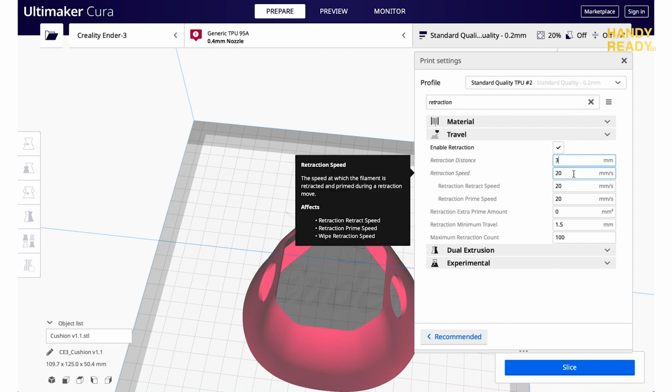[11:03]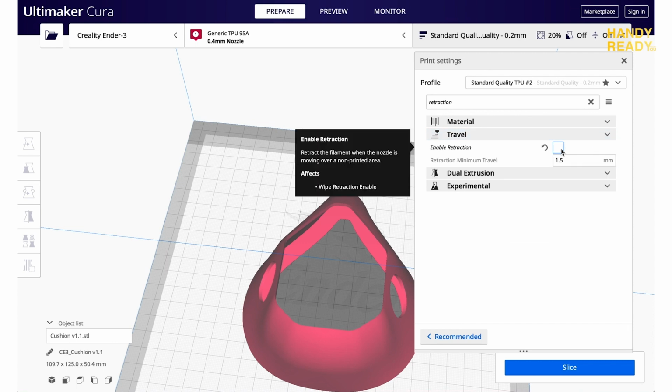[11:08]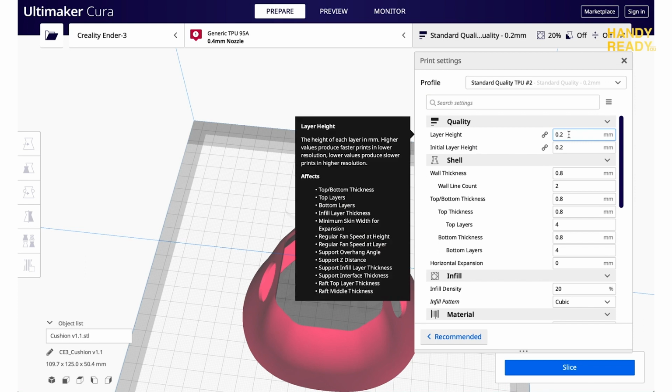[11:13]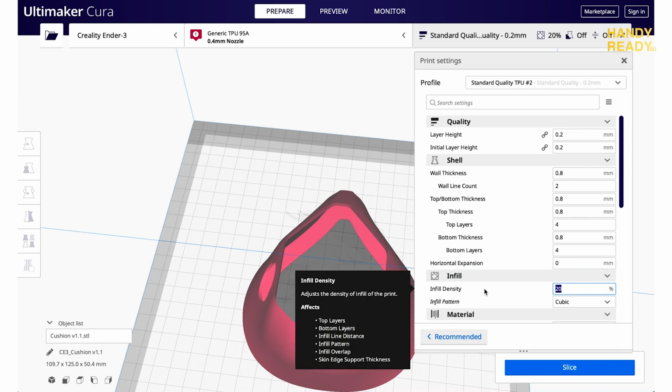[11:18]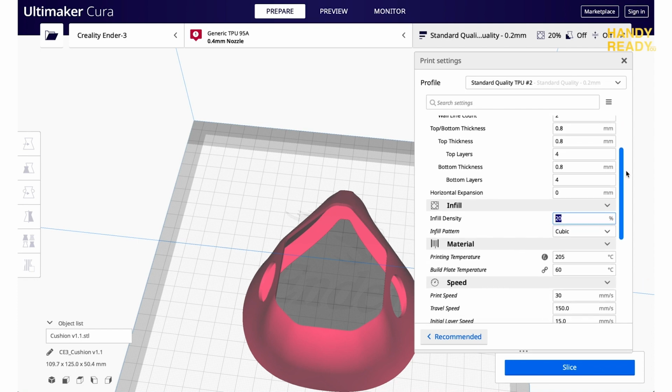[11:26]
In terms of printing TPU, the retraction is actually very important. I've changed the retraction to 3mm distance at 20mm per second. For even more flexible TPU, you might want to turn off the retractions. Then we come to the layer height, which was set at 0.2 with 20% infill. Lastly, one important thing to note is bed leveling. I find the TPU requires a little bit more room than the PLA. So for leveling, try not to do it so tight.
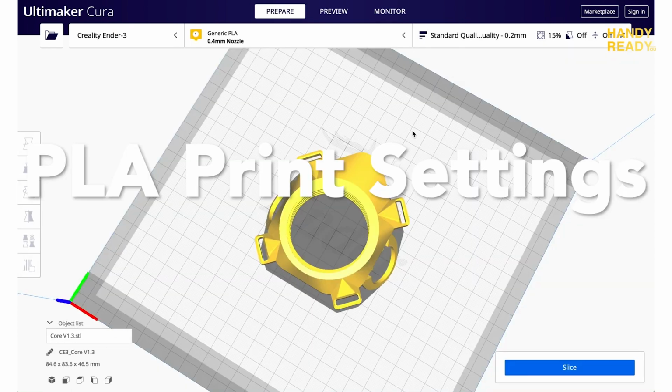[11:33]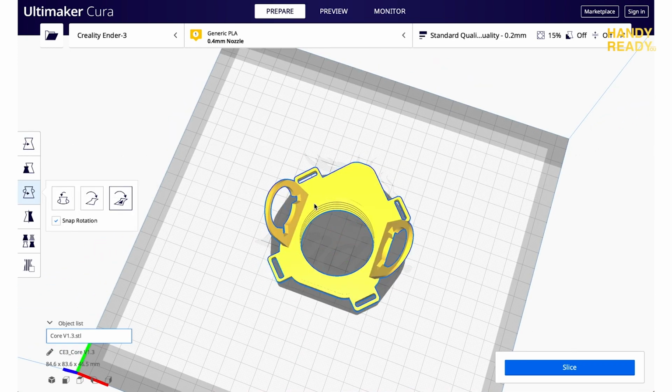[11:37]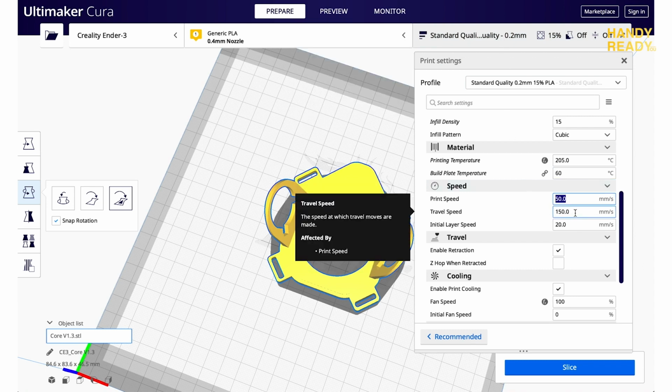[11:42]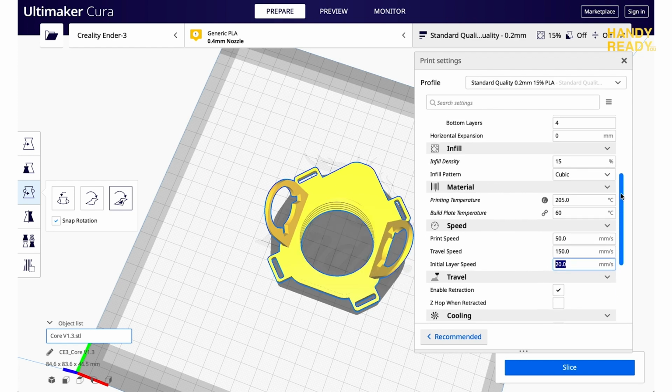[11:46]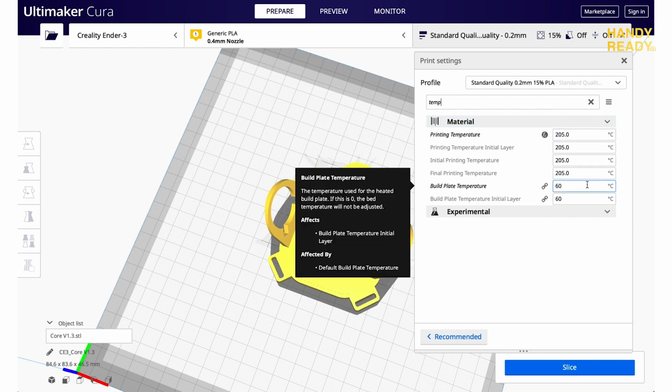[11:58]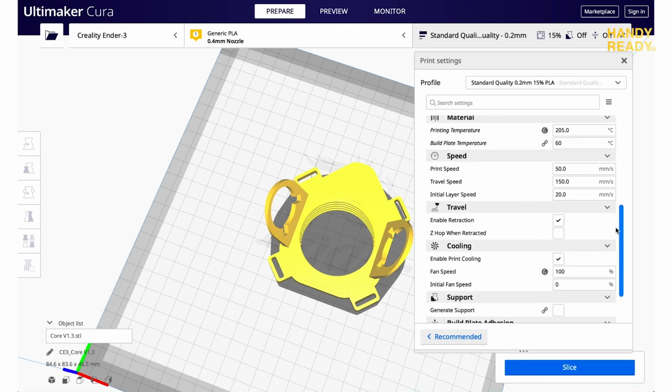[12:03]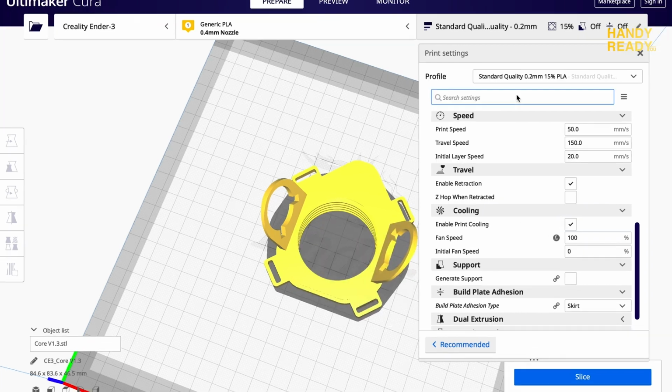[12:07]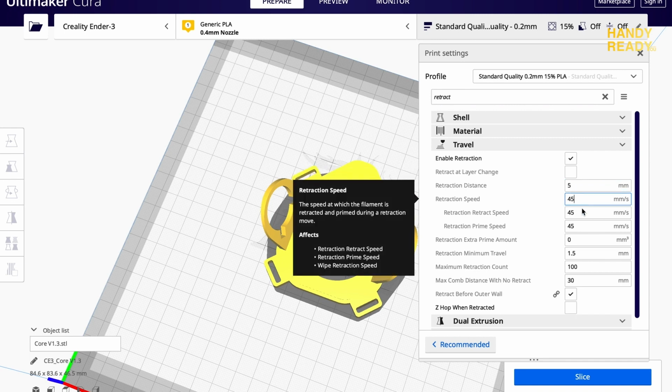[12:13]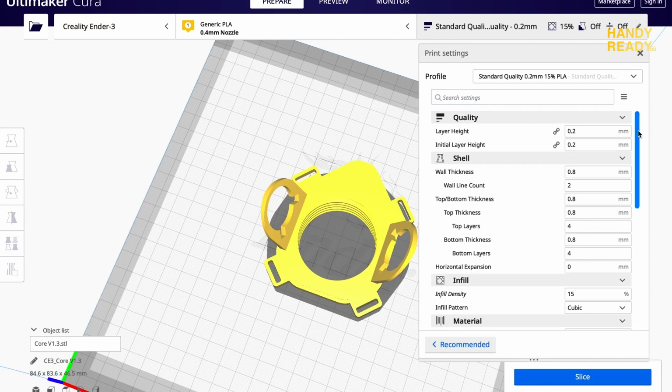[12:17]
Okay, let's move on to hard filament PLA. Let's start with speed. I set it at 50mm per second just to be on the safe side. The travel speed 150 as usual, and the initial layer is set at 20. This is basically the default for the Cura. As to printing temperature, I'm printing it at 205 degrees with 60 on the glass plate. In terms of cooling, I have enabled it on 100%. I've also tweaked the retraction distance to 6mm and retraction speed at 25mm per second. And in terms of layer height, I have it at 0.2mm and the infill at 15%.
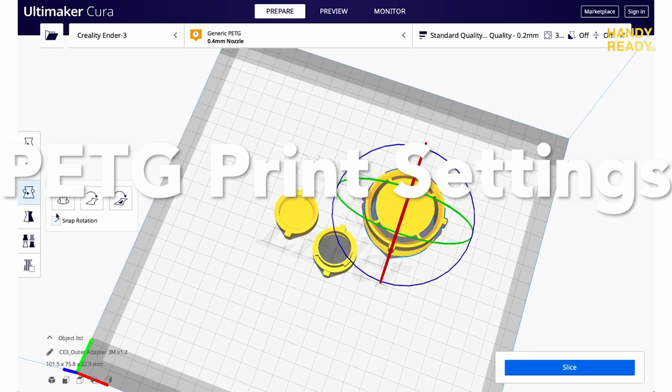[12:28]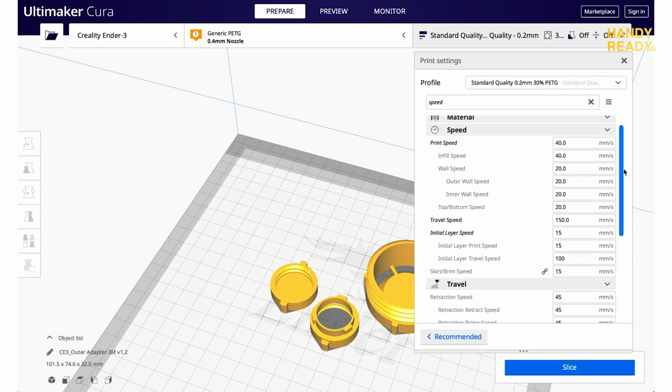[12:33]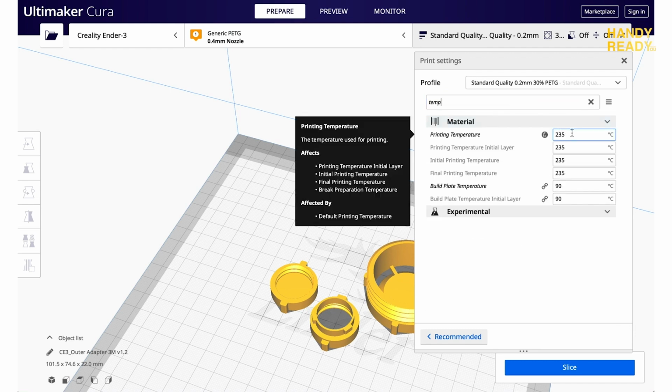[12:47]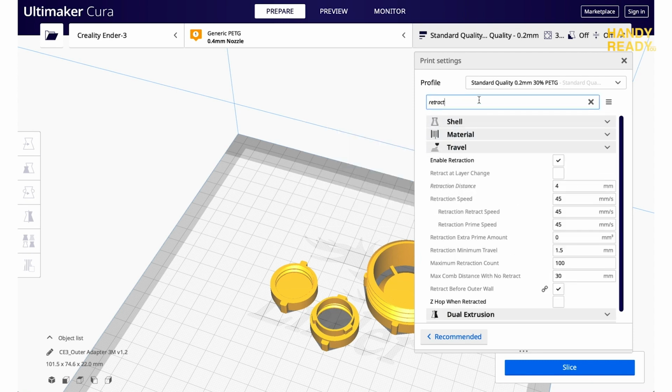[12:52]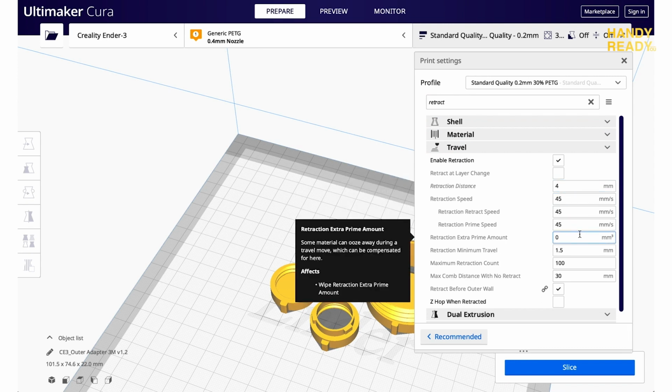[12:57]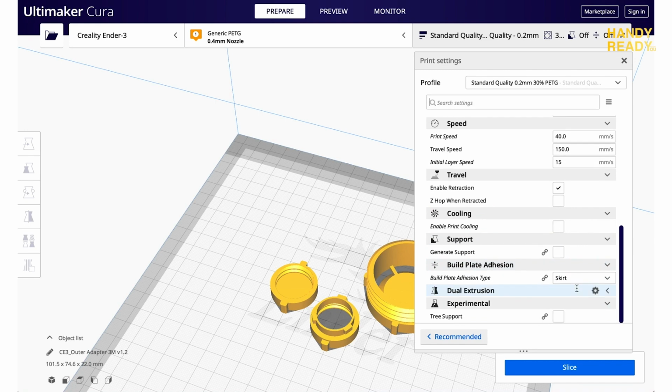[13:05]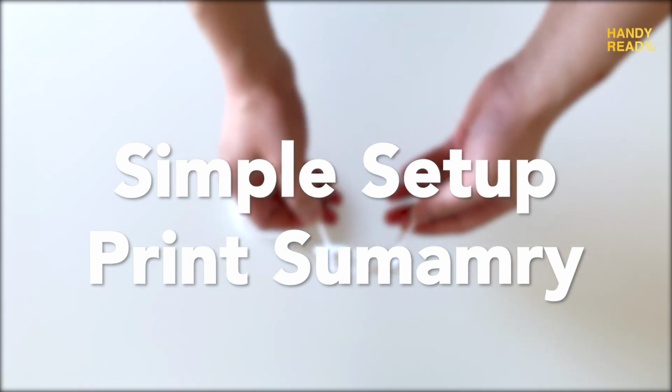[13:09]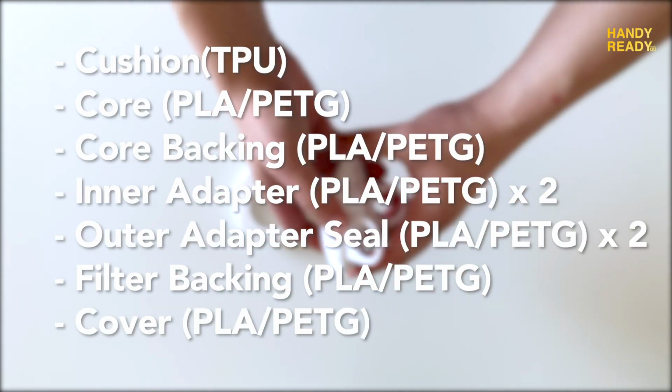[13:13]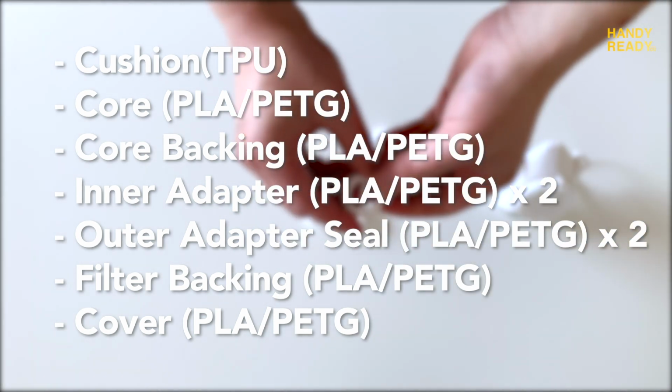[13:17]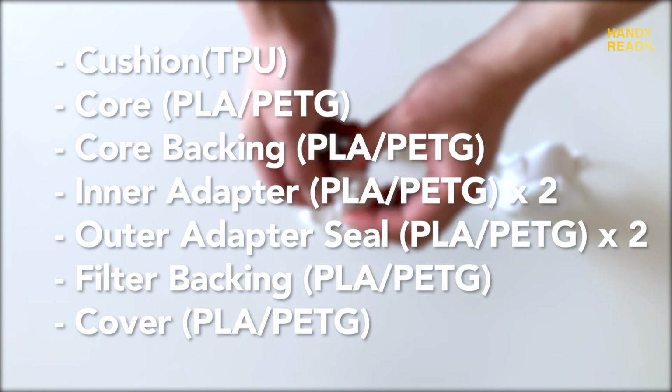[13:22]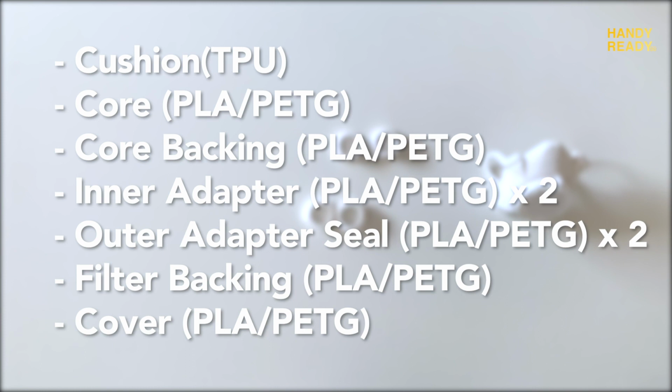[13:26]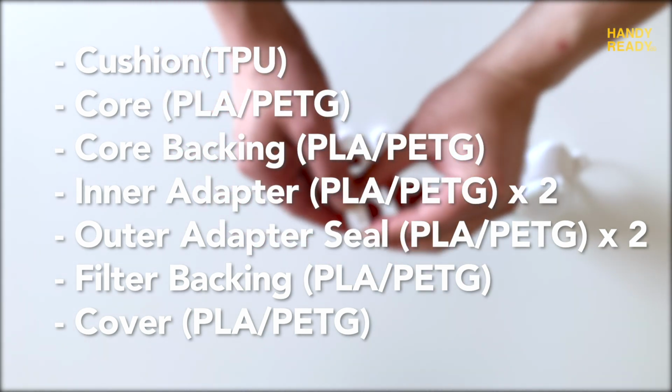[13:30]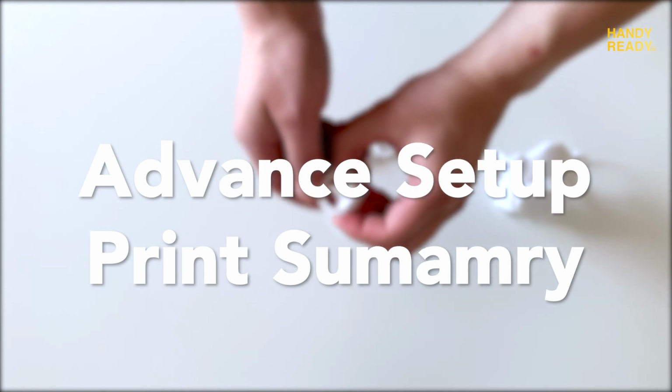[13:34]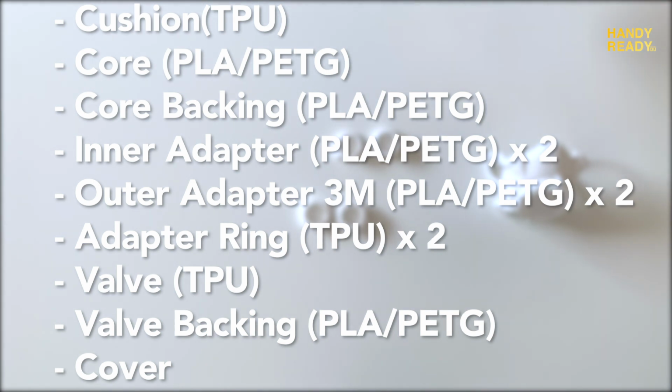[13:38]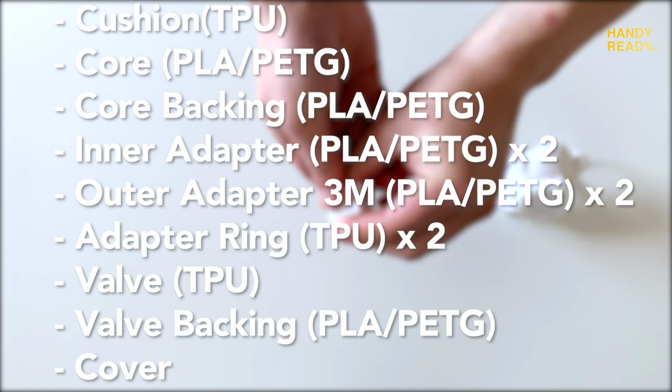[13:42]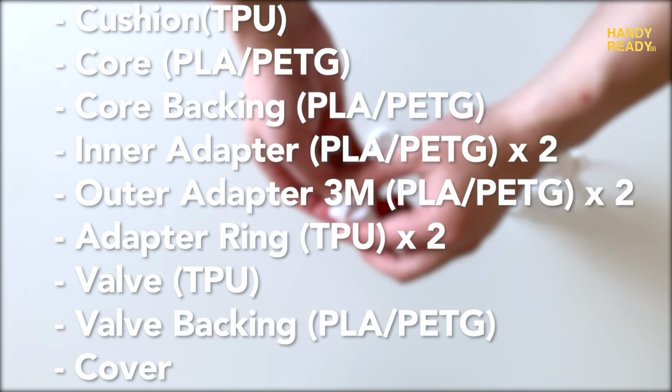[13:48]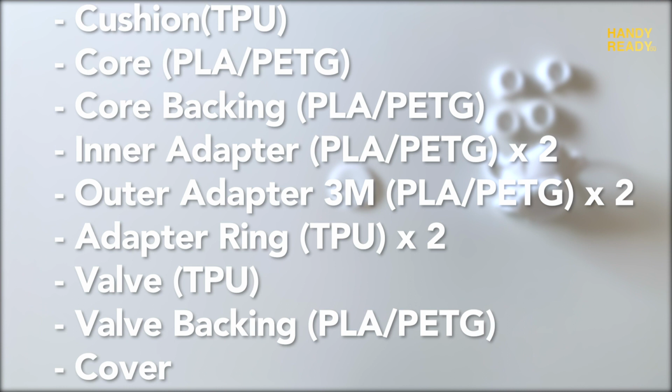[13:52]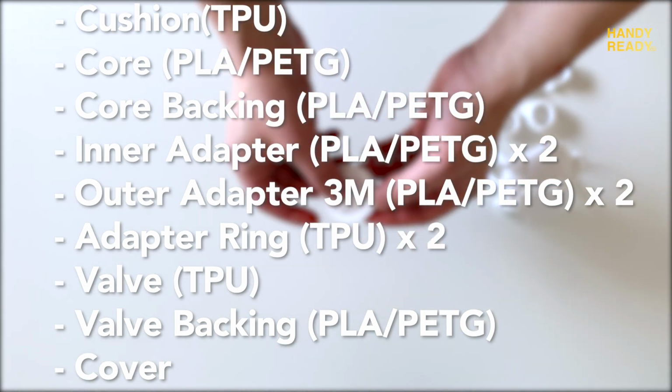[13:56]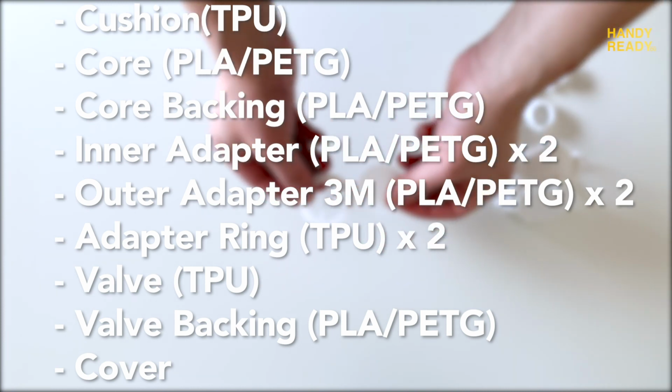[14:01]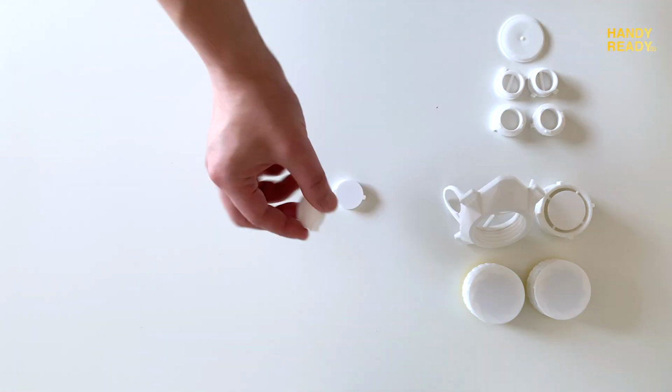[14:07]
Here's the summary of things you need to print. For a simple setup, you need the cushion, the core backing, inner adapter. You need to print two of them to go on each side. The outer adapter seal, also two of them. Filter backing, and lastly, the cover. For the more advanced setup for the 3M mount, you need the cushion, the core backing, two inner adapters, two outer 3M adapters, two adapter rings, one valve backing, and lastly, the cover. For all the components, you do not need to use any support, just as long as you print them in the correct orientation. So there you have it, guys.
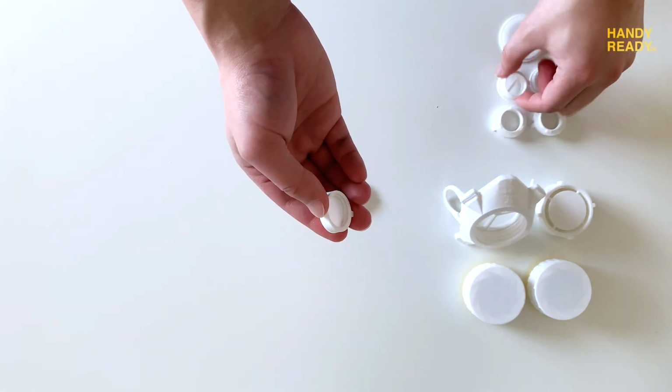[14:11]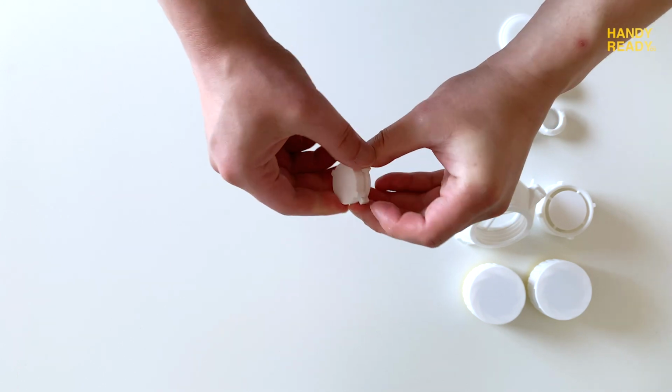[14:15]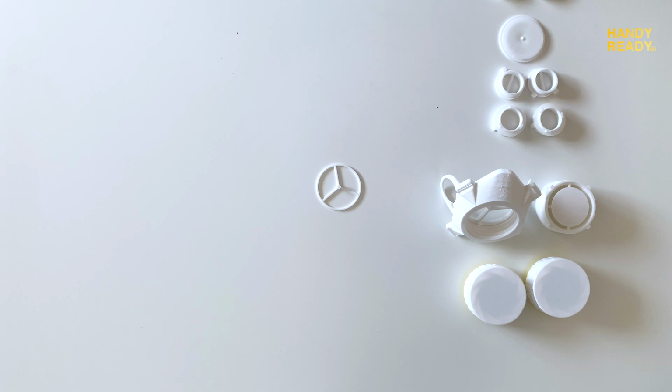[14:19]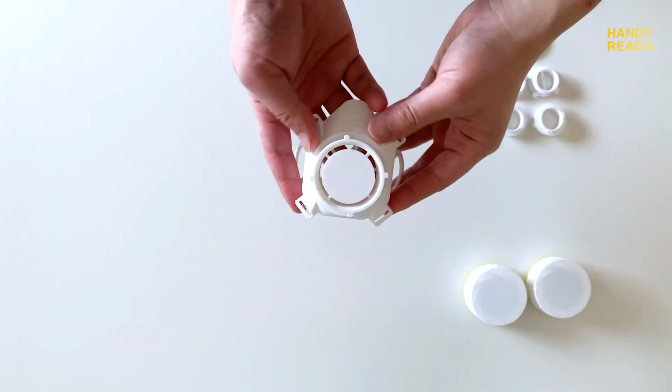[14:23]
That's all there is to it for the DuoMask. Obviously, there are future projects or future parts for the DuoMask that I'm working on. For one, the strap system. And for those of you who have any suggestions or any comments, you're more than welcome to comment down below or email me.